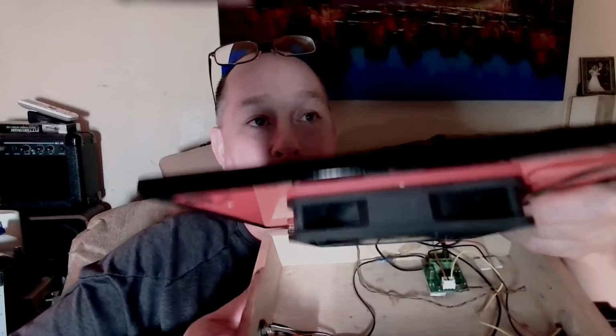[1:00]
My deep dive, long, chatty video is going to be on magnetic stir plates. So I built two. They both use a PC fan as the active ingredient. They both have throttle or speed control, and I came up with something that's an easy, affordable way to make a variable speed magnetic stir plate. And the active ingredient is something that's in season now.
Now, I had watched a video of another guy. I've watched a few mag stir plate videos, and I've made some of my own. So if you've already been down this road, just go to the second part and check out my new design. Okay. The video that I watched recently that got my gears turning was a guy who had used a smaller fan motor.
Now they are taller. A PC fan, the advantage of that is, well, one, they're cheap. We all have them, and they're only about an inch and a quarter thick. So you can squeeze them into a cigar box. That's pretty much how people will do it. Mount it in a cigar box, cut a round hole, get these magnets out of a hard drive. They're called neodymium or rare earth magnets, and they're really powerful. So you use super glue, and you glue one on each end, opposite poles, okay?
And then what I did was I kept stacking more. I would get another bad hard drive and pull the magnets out of it and then stack them up. So how it works is I have added a battery pack and a throttle, a PWM, pulse width modulation. And then I was getting warpage. So I put this plexiglass plate on here to eliminate the warpage. And you can see it work here. Here's this throttle control.
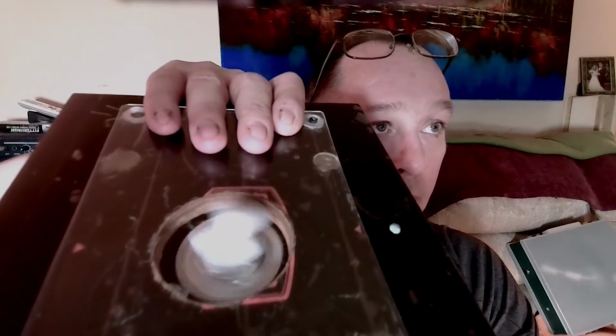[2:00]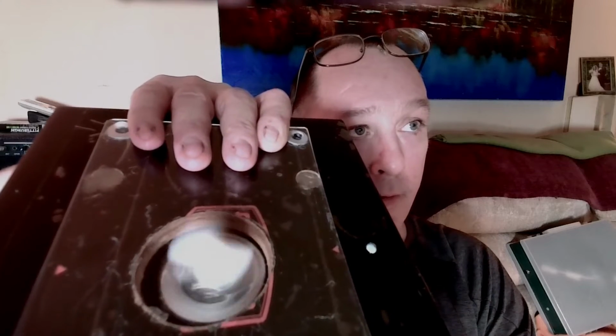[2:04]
And then you can have it go slow or too fast. Sometimes it'll go so fast that this thing will just go flying. And some vessels might have a curved bottom, and that lifts the stir bar so high that it loses its magneticity, loses its pull. So in that case, I take these 4 screws that are normally in here out, pull this off, and then that drops this jar. It's a 4-liter wine jug that I use for really big runs. So I can drop that down and then it'll make contact.
Now, that was bothering me, and I saw this other video of this guy. He used a PC fan motor. He used like a regular mini cooling fan and kind of a narrow motor, because a lot of them are really long. And I like this thinner design. I don't want to have a big vessel of liquid elevated too much because I'm a klutz.
And you can see here how it warped it. Do you see that ring there around the hole? It comes out to about here, and it's raised up. So yeah, I drilled 4 holes in this, countersunk, made these nice countersink bevels, and then mounted this on here. And I realized it would be better if I raised that up with some washers to balance out the millimeter that we picked up going north from this beveled edge. And it all works really well, even with the 4-liter vessel, until that one has an arched bottom and then I lose contact. So me having to remove this made me mad enough that I started watching videos again.
And like I said, this guy had a fan motor from a little portable personal cooling AC power. That's the whole thing. All these other designs use a DC brushless motor, PC fan, which is for speed control. I don't know if it's as flexible. It seems to me that you can get better speed control using a rheostat, maybe even how they have a dimmer switch for light switches. They have one that's for the ceiling fan. No, it's a higher amperage rating on the ones for the ceiling fans than the ones that dim the lights, the chandelier dimmer. So don't get confused and use that one.
Use the one that says, if you're going to try this, if you're going to try to slow down a motor, use the one that says it's rated for a ceiling fan. Now, there's this thing called the cheese wheel Leslie, and I already went down this route trying to slow it down.
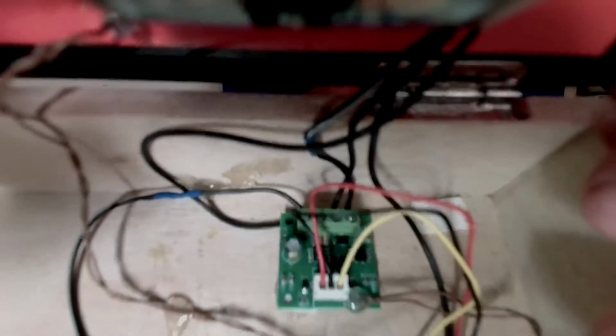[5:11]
You really need a PWM, and that's what's in here. This little green circuit is called a pulse width modulation. The power goes in and comes out, and the PWM has this control. You could think of your DC power coming into the circuit, and how it comes out, it's pulsing like a square wave, turning it on and off at these frequencies. That's a better way to control the speed of the motor than just adjusting the voltage or the current.
Now, you will see guys using multiple voltage power supplies where they have a little switch. It'll be like 3 volts on the bottom and 12 on the top. They might even have a switch for the polarity to reverse it, or a switch for, in this setting it's 150 milliamp, this setting it's 300. The thing with those is they don't have a lot. Typically, they're rated at 300 milliamps at the most. And I think you should have more amperage for doing this job. I mean, if you're just doing little applications and your stir plate is pulling it off, fine.
Here's the problem with mag stir plates. It's all a balancing act. It has to do with the torque of your motor, the amount of voltage, the amount of current, the weights, the viscosity of the liquid, the amount of liquid, the magnets inside your stir bar. It's all this stuff at play. When you get going at too high of a speed and you don't have strong enough magnets, the stir bar will go flying off and go ding, ding, ding, ricocheting all around the inside of the thing. So you can't go crazy fast unless you have a really strong magnet in your stir bar. And you need to order bigger stir bars because the magnets are going to be bigger, and they're expensive. So all this is a balancing act.
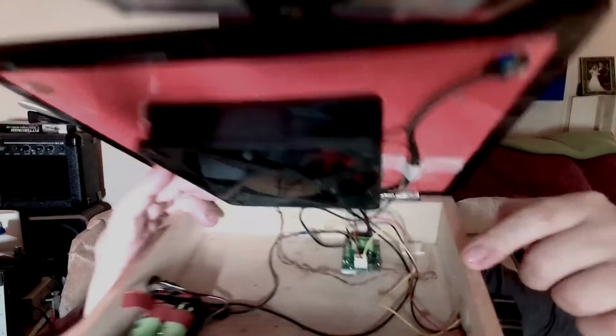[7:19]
I found that with this PWM, when I first built this thing, it only had the power switch. Now I added the PWM, then I added the battery pack and the plexiglass plate because it was warping around the hole where I used the hole saw. And then the last thing I did was put this packing tape down to laminate it, because a lot of times the vessels I'm working with are wet. Sometimes they aren't, and sometimes I dry them off. But ultimately, I really do like having plexiglass. I would recommend, if you're building your first one, do that, especially if you're using wood for the chassis.
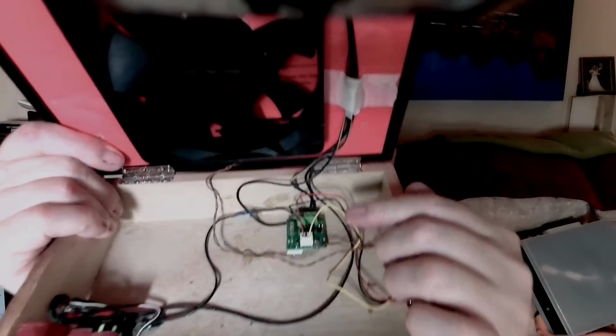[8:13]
Now, the PWM, this was the first PWM I bought. This was back when everything on eBay was a lot cheaper, so it was like $1 shipped. And it comes with a pot, a separate control. I found that this thing did help me slow it down, but not that much. The fan motor doesn't want to go around slow. It'll start out going pretty fast and then go faster. But it doesn't go slow unless you're starving it of voltage and amperage.
And the viscosity and the volume in your flask matter too. Let's say you're working with a 100 milliliter Erlenmeyer flask with water or naphtha, and then you have a 500 milliliter Erlenmeyer flask with maple syrup. Or let's reverse that. A 500 milliliter Erlenmeyer flask, which is just a triangular flask full of water, versus 100 of molasses, or how about just maple syrup? They're going to maybe spin the same, even though there's a lot more volume and mass going on with the 500 milliliters of water. Well, the viscosity is thicker on the 100 mil. So it all comes down to a balancing act.
The more ways you have to adjust things, the better. Like if you can have your magnets situation where you can add magnets later, that's helpful. I saw a guy who used a 3 centimeter high piece of PVC pipe that was cut, or even a PVC cap. He just glued it on to lift his magnets, and I thought that was brilliant.
Then I saw the guy with the fan motor, it was like a little electric fan that runs off of AC, not DC. That's important. Like a little personal fan, and he had that in a cigar box, or it was a metal, like an old power supply chassis. He had that in there, and then he had a power switch, and then a rheostat, which is a big coil. Like it gets hot.
These are found in old recyclable antique electronic devices that you're going to find at the resale store. They're going to probably be more expensive, and they're not going to be in season. They're going to be rare. So the rheostat idea I don't recommend unless you have access to a rheostat. And they probably sell them, but are they cheap?
I've seen people do this where you take an LM317 and just put the potentiometer on that, and that varies the current, the voltage. And that's a recommendation. Like if you have a cheap PWM that's not doing it for you, okay, here's what you do. Get an LM317 voltage regulator and put the potentiometer on there and wire that in front of your PWM, and then have a 12-volt power supply coming in. So you'll be able to throttle your power supply down to 3 volts or lower, and then that'll give you more room to play with your PWM.
And if your PWM is only working, like when I got this, it only worked if you turned it all the way up, and then you could come down maybe a 32nd of a turn and it would cut out. So I looked at that potentiometer, and that was 100K. Okay, so I started lowering the level, like 50K, 25K, 10K. I actually didn't do that many. I did a 10K, and then I did a 5K, and then I did a 1K. Then I tried a 512 ohm, and that was too far the other way. So I put, for my setup, running a
the power supply is adjustable voltage output from 3 to 12 volts, but it runs hot. It's like 4.5 to 16 is what it actually puts out. And there's a switch on there for 150 milliamps or 300 milliamps. And that plugs in back here. Okay. Or you can run it off the battery pack, the two 18650s, which is really nice, I gotta tell you. So this is one way to do it.
Rather than have one of those power supplies where you got to reach over on the wall and do it, I would say build your own voltage regulator circuit into it. Use the LM317 for that. Now they have these other, they call them PWM, pulse width modulation, where it's pulsing the juice, and that's one way to slow this motor. These PWMs that are labeled DC brushless motor speed control, which is exactly what this is.
Now, I'm not sure if the one that I got just wasn't scaled for this motor, or if they all act like this. I'm going to say I don't know. But there's another one that's $3 that has a brake button, it has a reverse direction button, and it has all kinds of different outputs with different frequencies, and that looked interesting. So I got one of those coming, and then I got another one that had a heat sink on it. And I think both of those are going to do a much better job than this cheapest possible PWM circuit that I could find, because I don't think the one that I bought said DC brushless motor speed control. But I don't know. And I don't know that much about this.
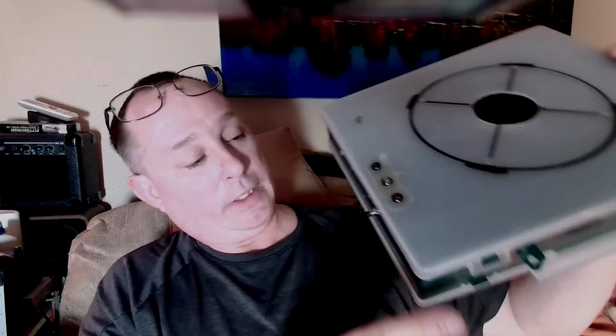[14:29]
But here's part 2. This is the second one that I built. I built this yesterday. The one main flaw is the hole is a little bit off. It's not quite lined up. But there are 3 speed indicator LEDs. There is a throttle switch and an output. And I'm going to demonstrate this for you now.
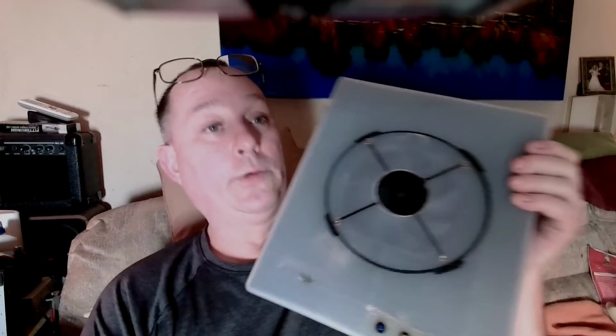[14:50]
If I had to do it all over again, I would do it this way. But I can't say that because I haven't tested it out with a liquid yet. I've just...
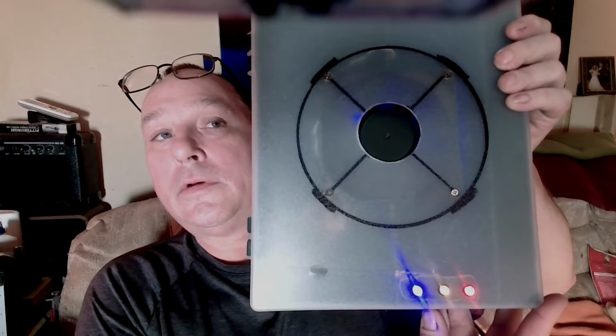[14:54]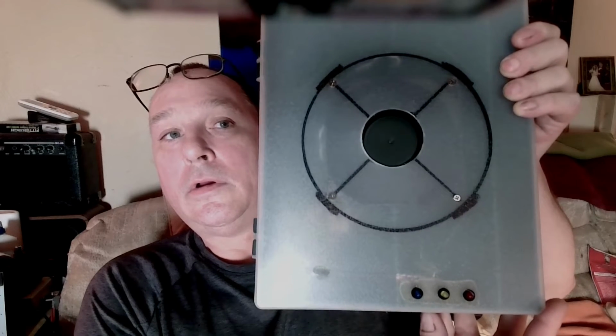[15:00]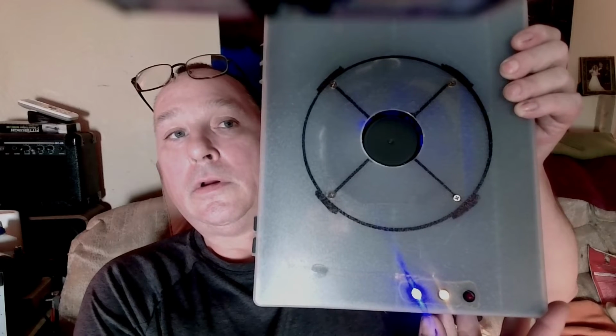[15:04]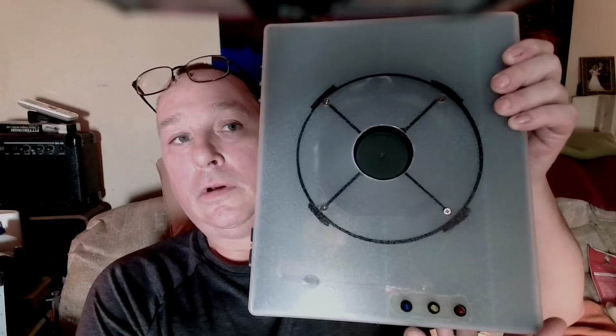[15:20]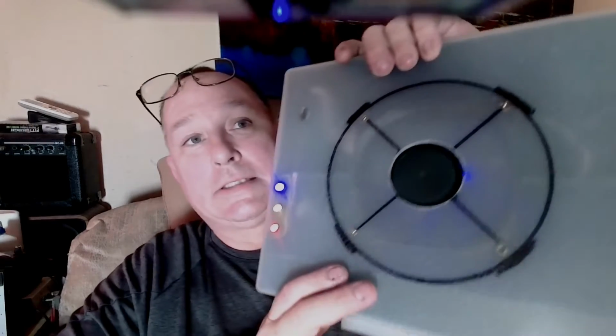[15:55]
So it's 3-speed and then off. And if you take a look inside of this thing, there's the controller board that has LEDs on it, which it does light up. And then on the bottom here, you just have slots for wiring. So this was some kind of all-in-one kit carry case chassis, and it's all plastic design.
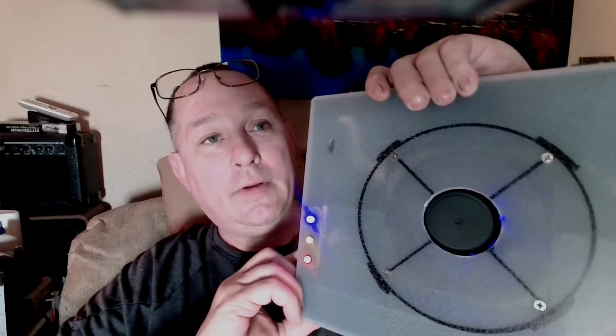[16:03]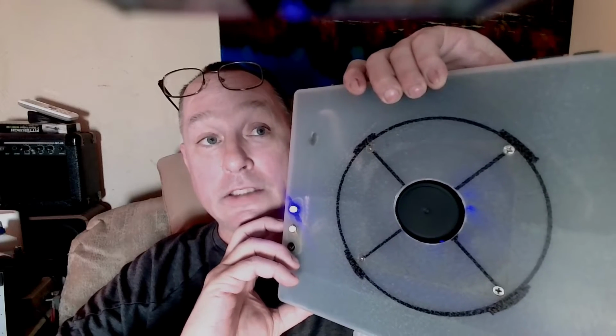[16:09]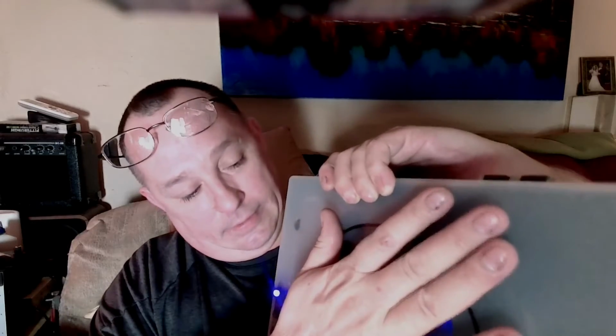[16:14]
When you turn it on, it goes slow, then it builds up. This is cooking. It's going fast. Second speed and low speed. So at the moment, I don't have an adjustable throttle. I just have the 3 speeds, and I'm going to build another circuit, probably that LM317.
I might take one of these voltage regulators I have. It's a DC buck or step down, and I got to see if I can wire in my own pot instead of the trimmer that's on there and see what the ranges are. Because see, that's the thing. I need to find a range that's not going to shut this motor off or make it go too fast or smoke the PCB.
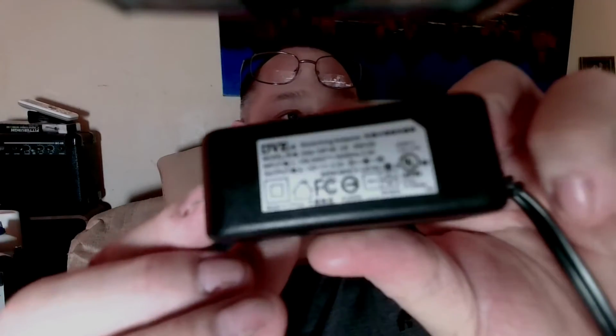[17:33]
So I kind of like, I can use this with one of those power supplies that has the 3 to 12 switches on it. But the problem with that is the only way that this will run with that is when the voltage is high. The voltage has to be higher because it's wanting to see 1.5 to 2 amps on the power supply. So the power supply that I'm running is putting out 5 volts, 2.5 amp.
Okay? And the circuit board and the fan came out of what was it called, Donna? Arctic Air. Arctic Air, which is this, I'm sure you've seen it, it's an infomercial for a swamp cooler. So it's a little white box with a couple switches on it. You plug in the adapter and you pour cold water in it, and it has a computer fan and it blows air through these filter units that wick up the cold water. So it's a swamp cooler.
A swamp cooler is an air conditioner that's based on a fan, a styrofoam cooler, and some ice, where you're blowing air through ice somehow. And you could use that in a last case situation. Like, I made a swamp cooler when I was living in my car. And I had a drain, like a tube going down out. I cut the door jamb, there's a seal, I cut the bottom of the seal out on this back door of the Chevy Citation I was living in, and had that run out and leak out. And it did help.
I mean, I would go and buy a bag of ice and put it on and be like, this living the life, life of Riley. It's leaking all over. I'm sleeping in a car, it was horrible. Absolutely horrible. And the reason that I slept in my car was because I was playing bass. And my mother, at the time I was 17, my dad had just died, and my mom didn't think that what I should be doing was playing bass in a band, and she kicked me out of the house for that. So I lived on the street for a while.
That was the worst part of it. I found a Ma Bell is the phone company, an underground fiber optic node that had 6 air conditioning units running in it, and there was one little output that blasted cold air out. And I made a tunnel out of Glad bags, where I cut the bottoms off the Glad bags and used 3.5-inch masking tape, and very neatly made this tube that I would attach one end of it with a cardboard baffle, and I could stuff that up there and put a rock on top of it, or use the masking tape and tape it onto this vent. And it would puff out slowly, and then I would take the other end of it and put it in my car window, and in about 10 minutes my car would be 10 degrees cooler. I could actually sleep, because it was like July and August, and it was a record heat that year.
So that's my story with the swamp cooler. I got caught. My brother lit a quarter stick of dynamite off next to it when a bunch of the service writers and salesmen were there gathered together to go play paintball. And he caught me jumping out of the car. When it blew up, I was sleeping and I heard this loud noise, and I put my head up by the vent, and a huge hit of smoke came out and hit me in the face. So I freaked out and I jumped out of the car, and I just had underwear on. And they had a Polaroid and took a picture of me.
And then the owner of the company came up and said, "What are you, some kind of fucking parasite?" He was a German guy. He called me a parasite. I'm like, well, technically, with the tube where I'm leaching resources, yes, parasitic behavior at best. And you know what? If I got a guy working for me who's living in his car and he did something like that, I'd fucking give him a raise so he could have a place to stay. I'd be like, this guy's fucking brilliant. I'd be like, dude, you're the head of our fucking research and development. Corner office, what do you want? You need a secretary, blonde or brunette? Bring him in.
But the swamp cooler thing, they're $5. They come with the 110 millimeter fan. There's a single PCB. The PCB has some LEDs that will light up. There's 2 switches on the unit. One switch changes the colors of the stupid stock LEDs. The other switch changes the speed of the motor.
Now, the LEDs didn't light through this plexiglass enough to do anything. I initially did have a second switch to change the colors, just because I had to. And then that stopped working. Something on the board failed, or something's not right. I checked everything out and tried rewiring it, and eventually just ripped it out of there. But so I would say don't even bother with that.
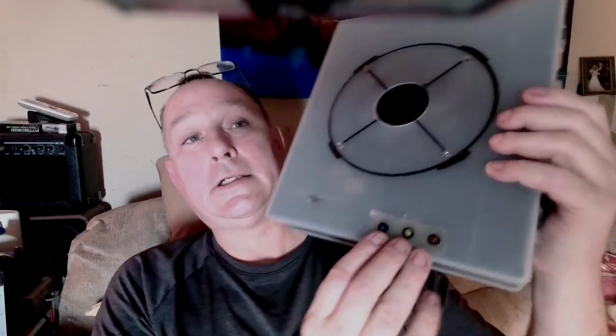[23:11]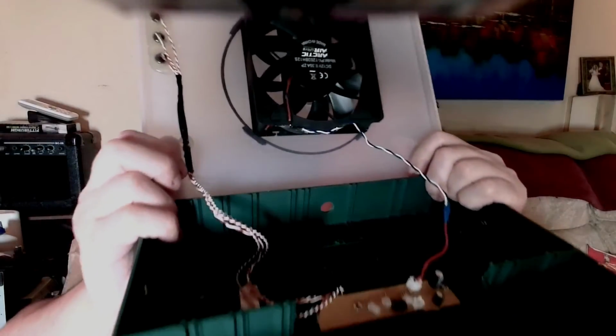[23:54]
But the thing with the speed indicator LEDs, these 3 LEDs here, those are mounted on the board and they're SMD. So I removed those and soldered. We braided this wire. There's 3 candy cane stripe wires, and we braided those wires last night. Basically, you chuck them. You take 2 wires about 2 feet long, and you put them next to each other, and you fold over about 1 inch, and then you stick that in the chuck of your drill. And then my wife holds out the red and the yellow wire, and I'll run the drill on slow and move my finger down. And you can braid wire real nice like that. It braids it tightly, but this PCB here had those 3 LEDs on it that would change for the speed settings.
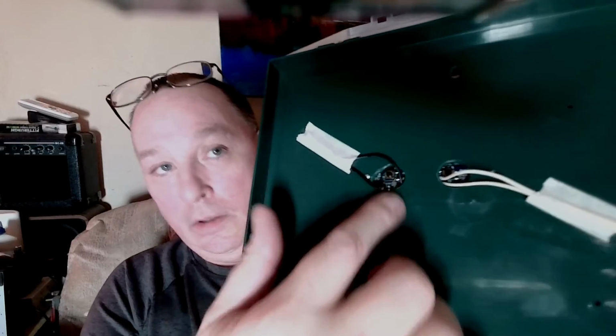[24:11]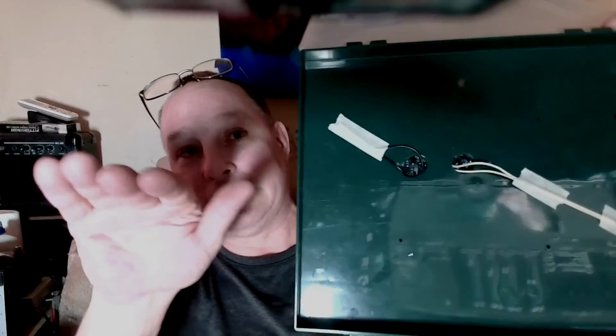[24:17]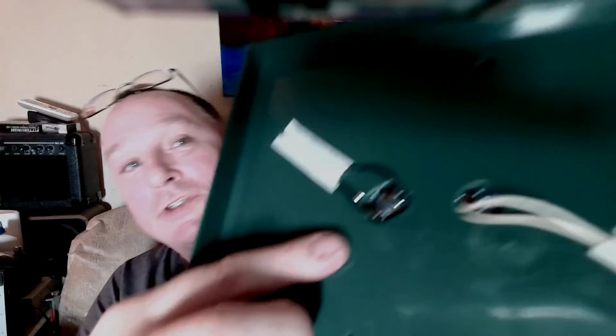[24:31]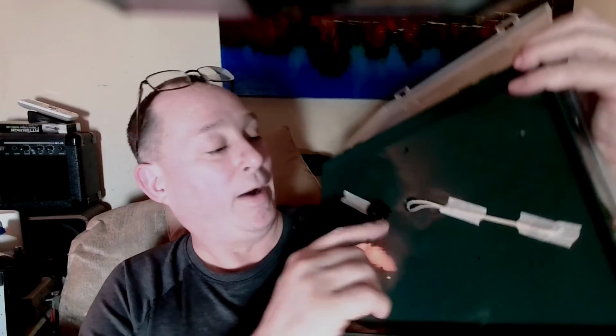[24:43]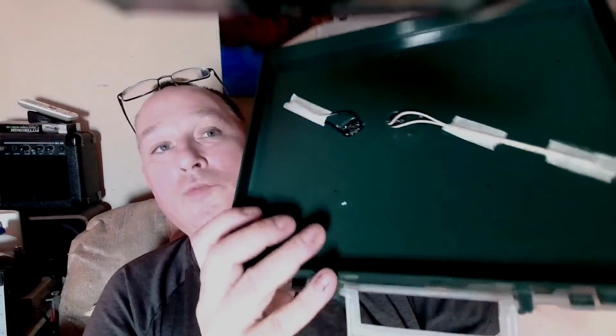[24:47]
And I used a hole cutter to give space for the switches to sit, because I had to have this facing down because I wanted the LEDs facing up. There's 2 fasteners stock, and I just drilled those out to mount it. But I had to cut these holes to have the switches in this, there's a little coil on the board that sticks up. So I cut those 2 holes and then ran the wires through the holes as well. And this chassis is a really perfect thing for this job. It was absolutely perfect. Couldn't ask for better.
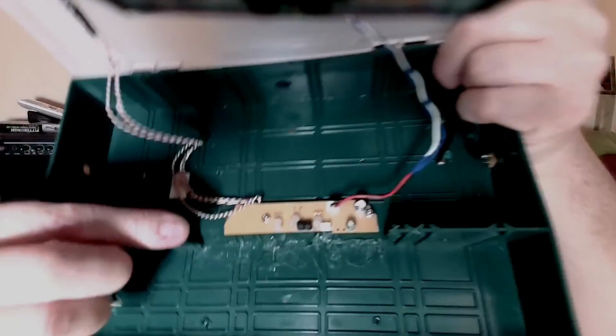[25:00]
I had to cut out a slot here with a hot knife. So for that, I have an old pocket knife with a smaller blade, and I'll use a propane torch and get that blade hot and use that to cut. The technique is called hot knife, and you just want to have a fan blowing because you don't want those plastic fumes bugging you. But yeah, this was a real easy build. I'm waiting for the magnets to arrive from eBay, and then I will glue those magnets on here and be able to try it.
I think the only thing would be that I need to regulate the voltage because I think it's too fast. For smaller, like let's say I was using a 250 ml Erlenmeyer flask with water, turning this on. Okay, so when it comes on medium, and then it raises up a minute later. So if you're quick, you can turn it on, and it'll go to low.
Or you can turn it on, see, that might be too fast. I don't know. It seems really fast to me, and I like the idea of having the high amperage.
So finding a variable way to reduce the voltage, like if you're thinking traditionally and cheaply, to do it with an LM317, right off the bat. I think those pass a half of an amp or maybe an amp. This calls for 1.5 to 2. Now, 1 amp I'm sure is fine enough to drive this thing. So you could experiment. Try it with an LM317.
I would say you could even put the voltage regulator circuit on the wire coming out of the PCB going to the fan. But I don't know. Again, this is all just blind speculation on my part. I do feel I'm going to want to provide some additional speed controlling because I'm really picky with that. Like these 3 speeds are not going to be enough for me.
And I know you can vary it because I played around with a 300 milliamp power supply that goes from 3 to 12 volts. And the thing about that was it wasn't running unless I got it past like 6 volts. Like it wouldn't run at 4.5 volts because it was turning and the board mounted LEDs were flickering and it would stop. It would come on and it would turn and the board mounted LEDs were going, and then it would stop. And I was like, what's wrong?
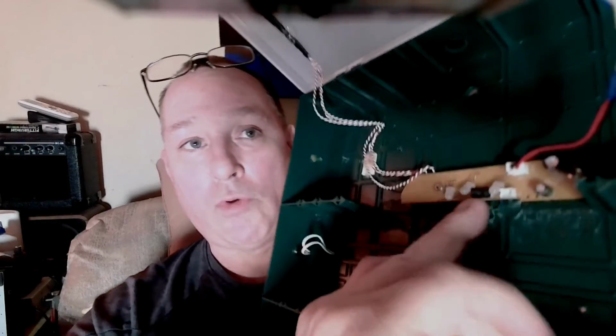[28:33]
Now the other thing with this, on this PCB, there's 2 ports stock, okay? The second port where there's nothing there, I shorted those pins. There's some kind of a piezo sensor. It's like a foil wafer, and it sits in the reservoir, so when you fill it up with water, this thing knows, and I think it provides a hard short to those 2 pins. So if you build this and you're testing it and you're not getting anything, short those 2 pins on that secondary connector.
And this is why you never want to not listen to what PD has to say. Yeah, you could skip everything, but you're going to miss the whole secret of how to get this thing to work. Because if you don't short those pins, it ain't going to work. And that was my deep dive on magnetic stir plates. That's what they're called. Gee, that's a big word. I hope you enjoyed it.
I'll probably do another quick video for people with lesser attention spans and just show this idea off, because those things are out there. There are people buying swamp coolers. If you said something bad about it, you'd get people who would go nuts and attack you. And I don't know if those people were working for them or if they were just really deeply mentally disturbed people. Because I built myself a swamp cooler when, like, I really wanted it to work.
You know what I mean? I wasn't fooling around when I made mine. I needed to cool myself down because I thought I was going to die. It was so horribly hot and I couldn't sleep. So if it wasn't good enough for me making my own back then, a miniaturized version that you buy off Home Shopping Network is certainly not going to feed the bulldog.
And by that I mean there's a lot of Arctic Airs out there floating around in resale stores. So buy them and give them to that handyman, home chemist, lemonade enthusiast, laboratory operator that you know and love. I'm going to start hoarding them. I'm just going to start making Max stir plates. I'm going to be walking on them. There's going to be a current of air strong enough to levitate me. So many Max stir plates.
If you're scared about cutting in wires to those micro SMT tiny LED pads, you have to go through, apply flux first and resolder them to get a good solder bulb on there. Then clean it with alcohol. Then get some single core, single strand wire. You've got to have micro wire. And when you're done tacking those in, you need to hot glue over all of that. And then you won't have to worry about it.
So see, you get tips too. And if that was too much for you, well, I don't know what to say. Go and leave nasty comments in my comment section. Get all mad at me because Full Tone is going out of business.